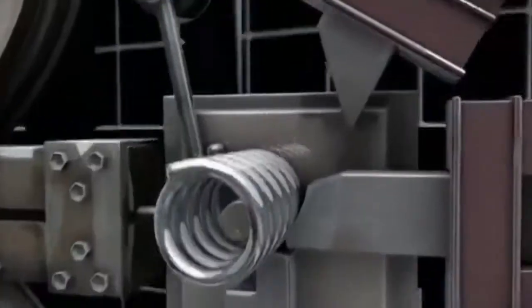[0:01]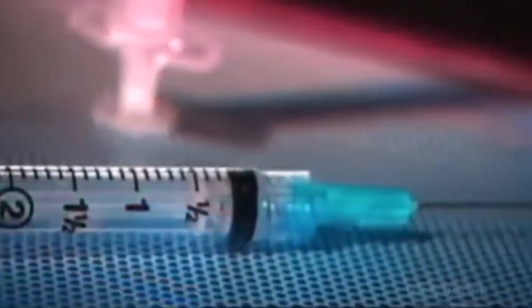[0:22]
A hypodermic needle is the proper term for a syringe and needle. It's used to draw blood or inject medication. This indispensable tool was invented back in 1853, but it wasn't until 1954 that mass-produced disposable syringes came on the market, developed for the vast immunization campaign against polio.
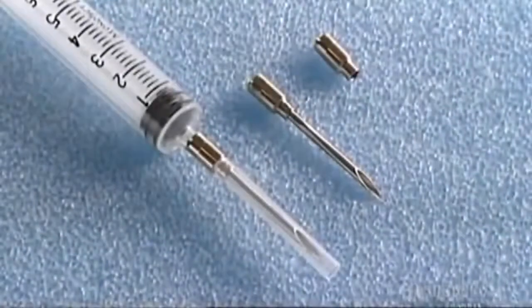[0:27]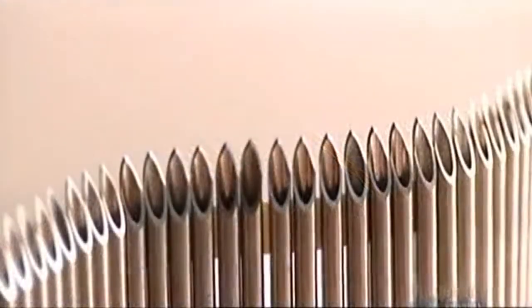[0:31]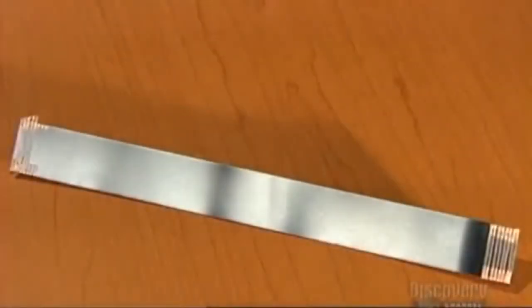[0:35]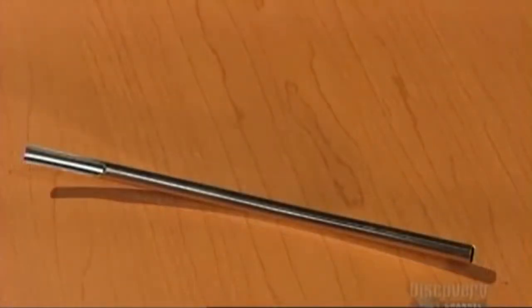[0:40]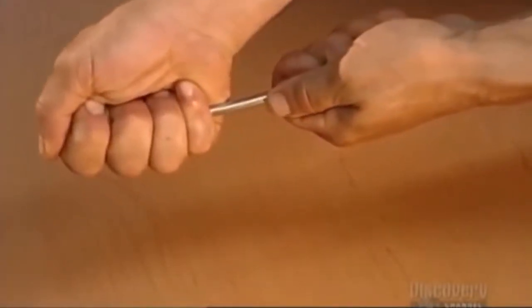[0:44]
A syringe may make you cringe, but the treatment it delivers could be a lifesaver. To make a hypodermic needle, they start with a flat strip of stainless steel. A milling machine rolls it into a tube shape. A laser welds the seams together.
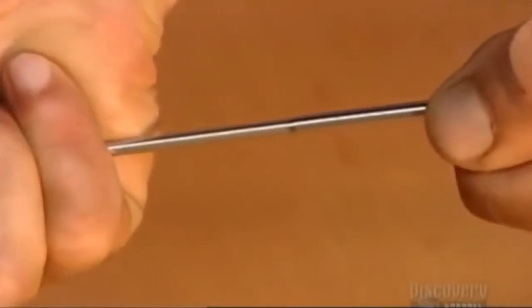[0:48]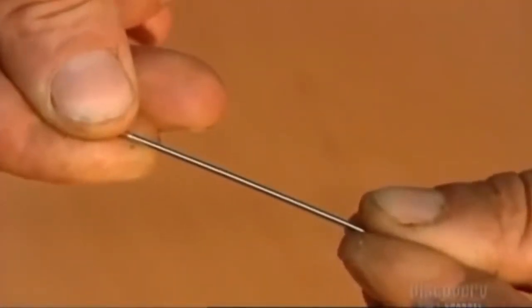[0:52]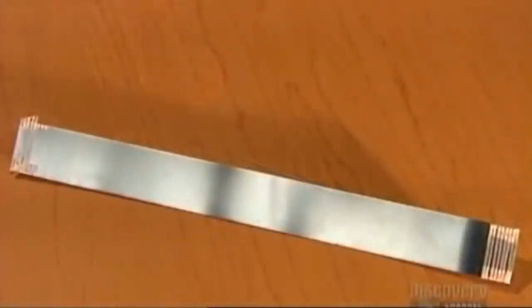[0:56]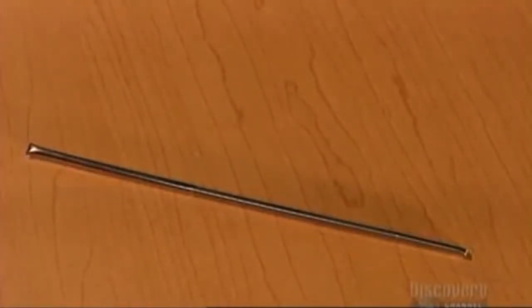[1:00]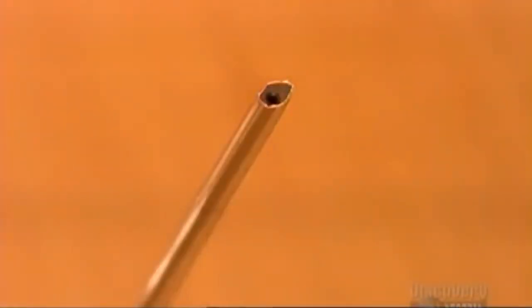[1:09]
But what makes the steel stiff enough to use is something called cold work, in which they press the tubing through a die several times. This also slims the tube dramatically, so now you have a thinner, tougher tube. It takes about a couple of days to turn the stainless steel strip into a tube with needle potential. But it will have to be sharp to perform, and the next steps will focus on getting the steel tube to a point where it's more than just a blunt object.
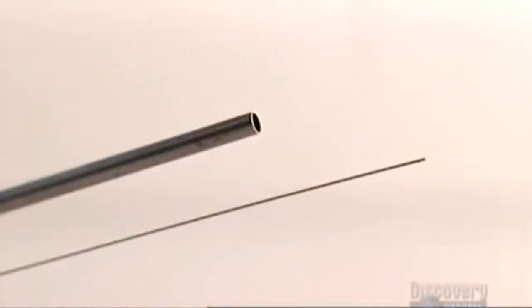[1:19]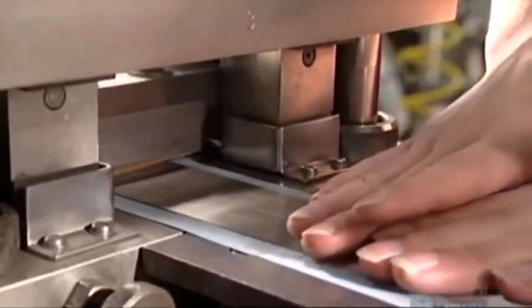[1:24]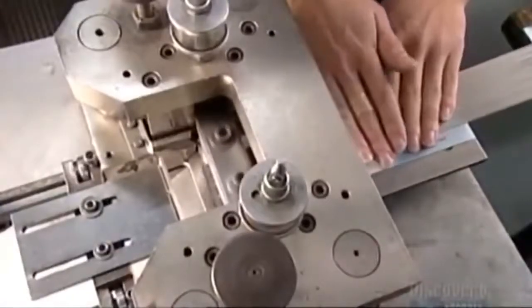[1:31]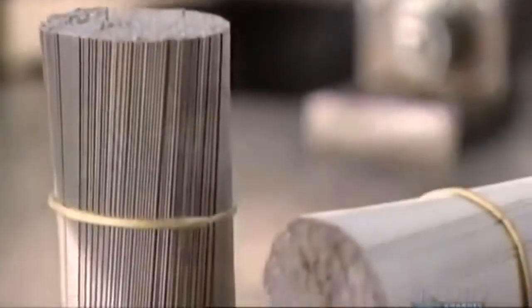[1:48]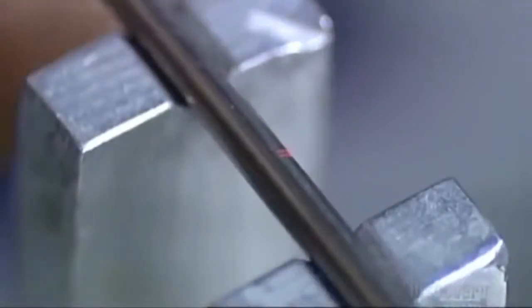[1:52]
An electrically powered blade scores the walls of the tubes as rubber pads bear down and roll. This rolling causes the tubes to finally break at the score line. The tubes are being cut down to size, about 5 centimeters long. The tubes fall into a bin, a tangled mess. The bin, driven by air pressure, agitates, and this shaking motion straightens them out. An operator bundles them together with a plastic band, but removes a few to check the specs.
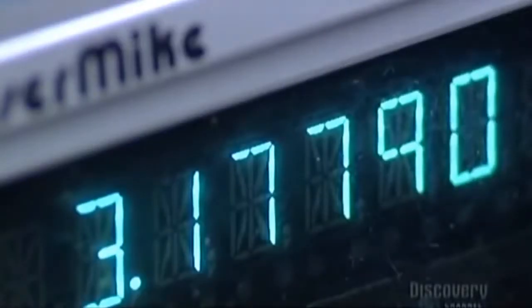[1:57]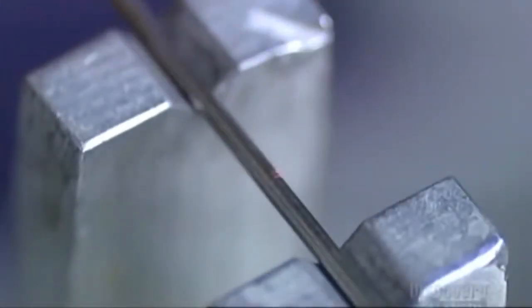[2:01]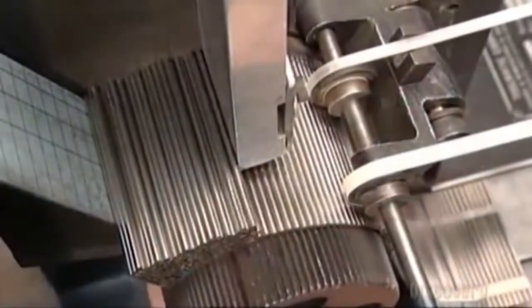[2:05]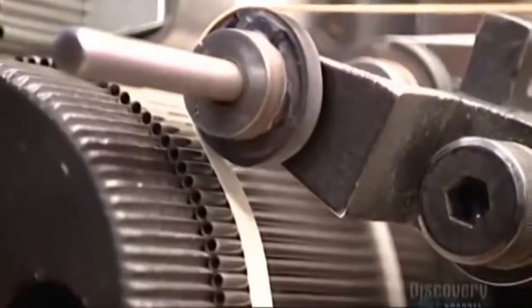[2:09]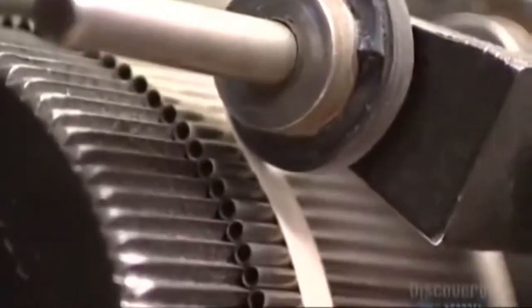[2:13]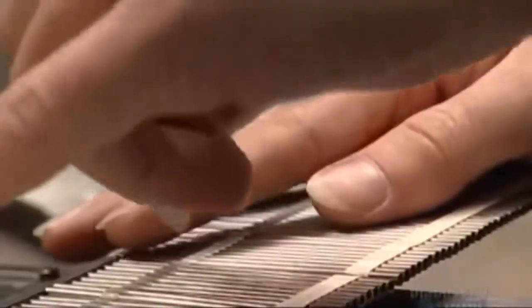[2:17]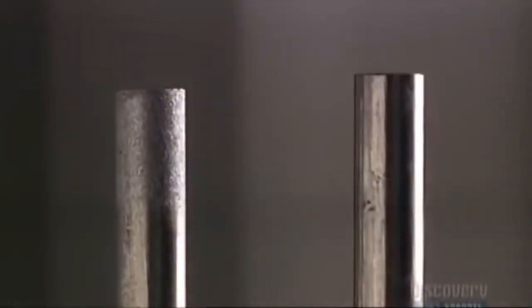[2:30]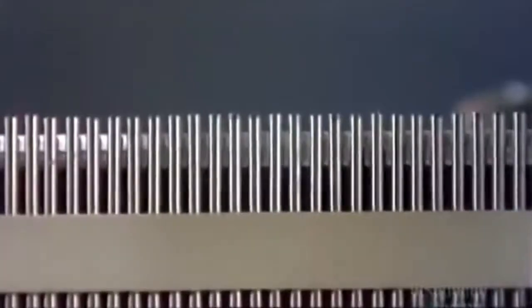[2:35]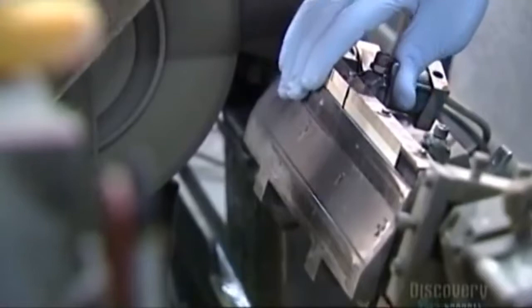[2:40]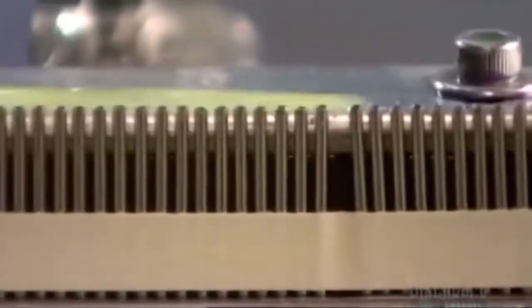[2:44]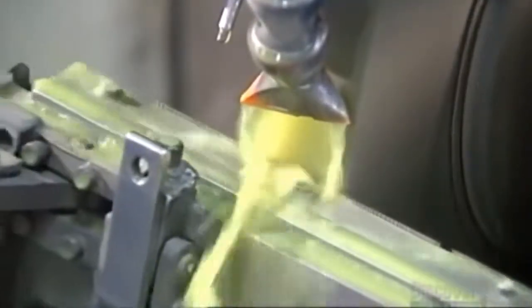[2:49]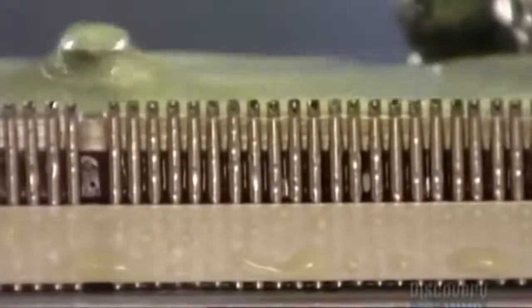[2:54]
Then they spray aluminum oxide on the ends of the tubes. This roughs them up so that the surface will be easier to work with. Now they place the strips of tubes into the grinding fixture, and then they snap it shut. Coolant flushes over the tube tips as the fixture moves across a grinding wheel. The wheel grinds through the tops of the tubes, shaping them into a rough point. This is only the first grind, so it's not yet needle sharp.
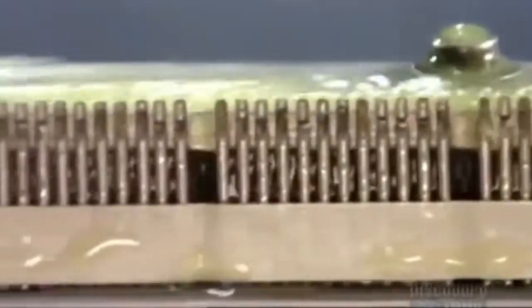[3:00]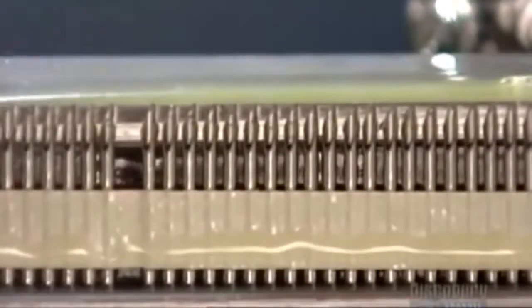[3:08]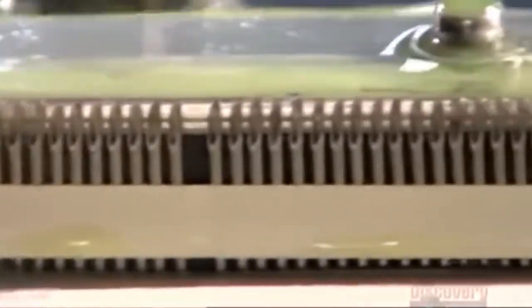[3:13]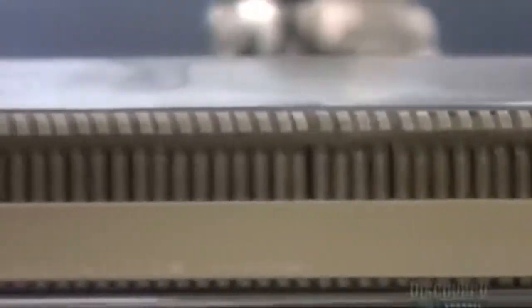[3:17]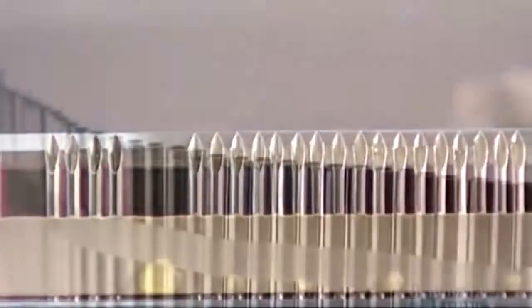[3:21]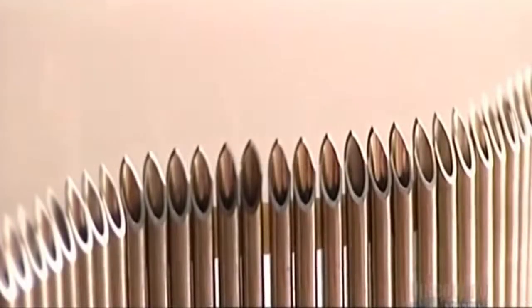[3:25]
Now the fixture rolls and rotates the tubes. Then it's back to the grind. The angle of the wheel is changed so that it sands the sides of the tubes. These two secondary grinds sharpen the tubes into a finer point. This is how they looked before grinding, and this is after, with their sharp needle tips.
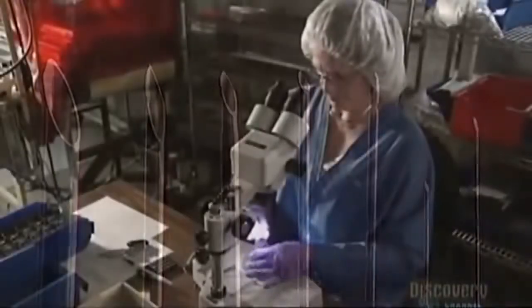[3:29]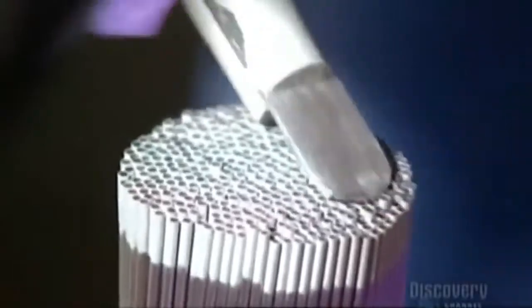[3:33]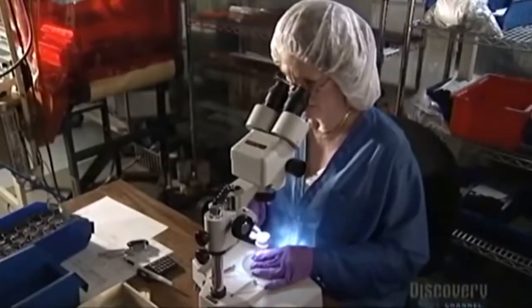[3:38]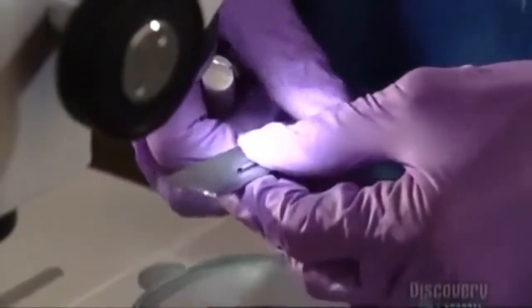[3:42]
Now it's time for the big inspection. She pushes the ends of the needles with the back of her tweezers to make sure they're even, and then pulls out a needle for sampling. She measures the length of the grind. It should be a few millimeters long.
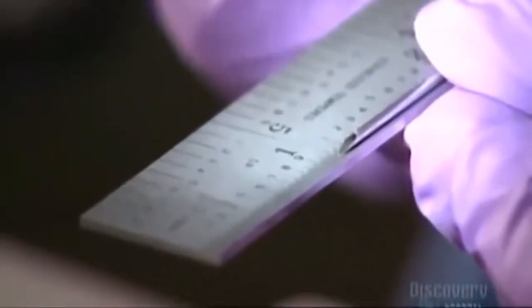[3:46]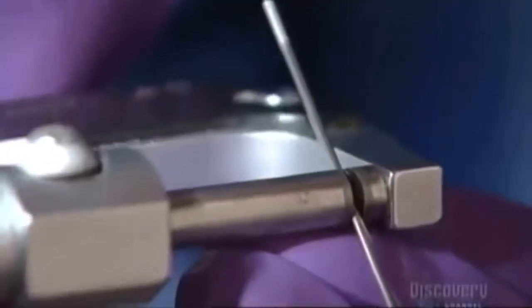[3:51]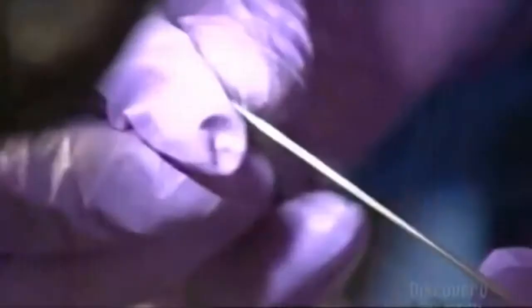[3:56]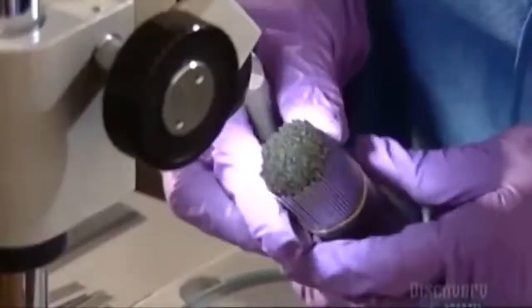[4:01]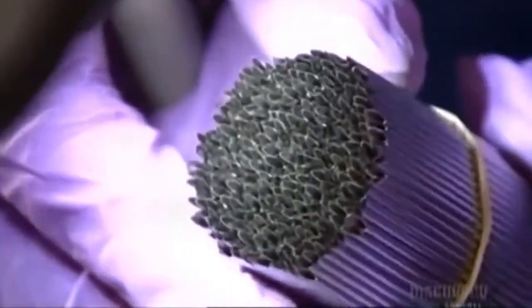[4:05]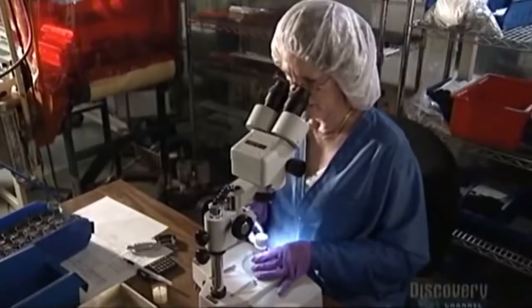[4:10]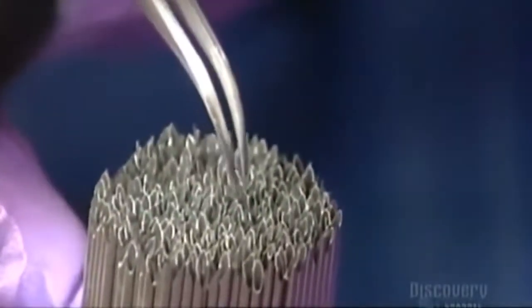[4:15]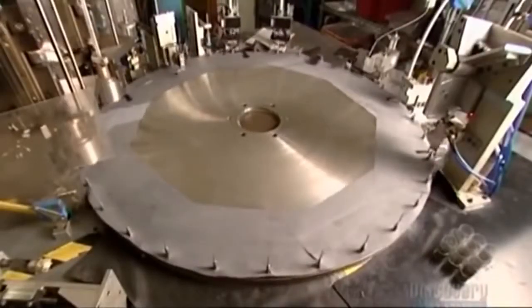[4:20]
Next, she sizes up the needle's outside diameter with a micrometer. Holding the needle between posts, it measures the space between them. Then she checks the inside diameter by inserting a plug gauge into the tube. Now she inspects a whole bundle of needles for irregularities or burrs. Using tweezers, she removes one for a close-up look under the microscope. Once they pass inspection, it's on to the big wheel of the automated assembly machine.
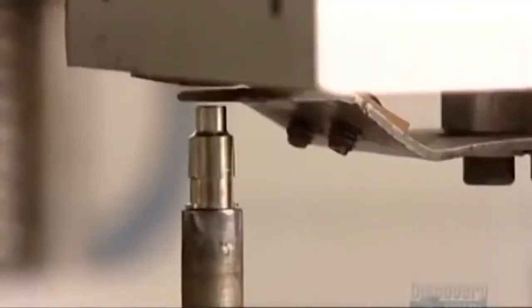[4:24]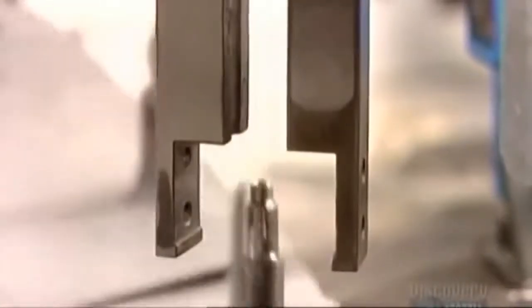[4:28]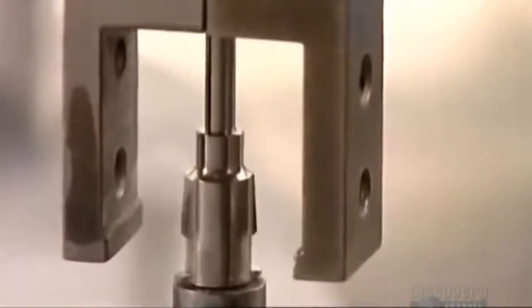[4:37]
Brass and nickel-plated fittings called hubs drop onto pins on the wheel. Then needles fall into the hubs. Metal fingers align them so they fit together precisely. The hub is the piece that will connect the needle to the syringe. Automated crimpers press the needle into the hub. Sheer friction bonds them.
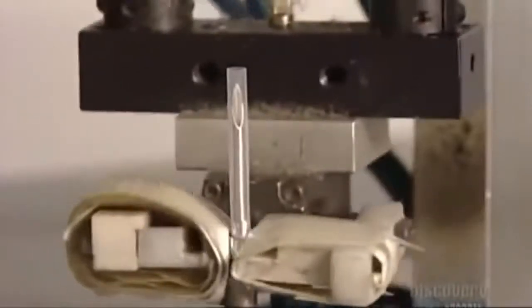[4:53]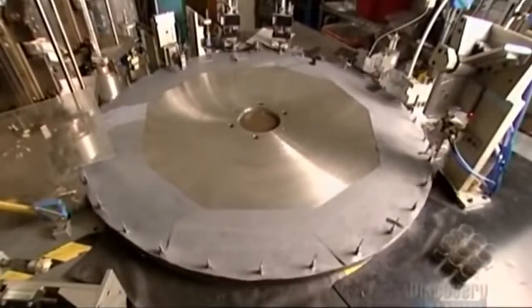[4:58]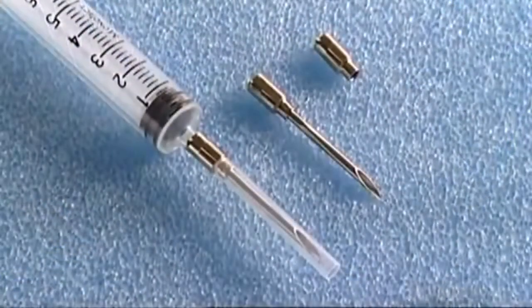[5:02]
Now two metal pads on the same wheel position the needle. A plastic sleeve drops down, encasing the pointed tip. Finally, a robotic arm lifts the needle off the wheel and drops it into a bin. The needles are now ready for you, but are you ready for them?